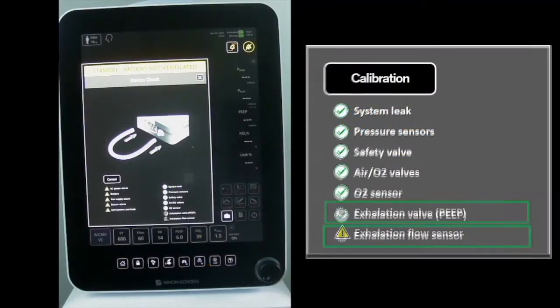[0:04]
The exhalation flow sensor test. The exhalation flow sensor test is comprised of two stages. During the first stage, the exhalation flow sensor is calibrated against the internal inspiratory flow sensor. During the second stage, accuracy of calibration is verified at 30, 10, and 3 liters per minute. In the video, my test is going to fail due to a damaged expiratory diaphragm.
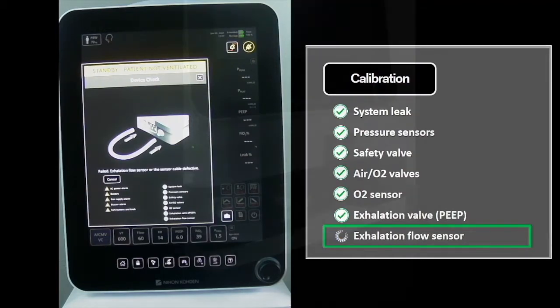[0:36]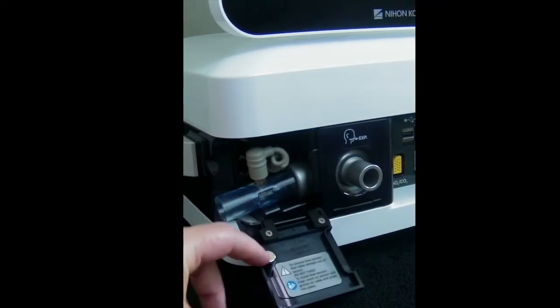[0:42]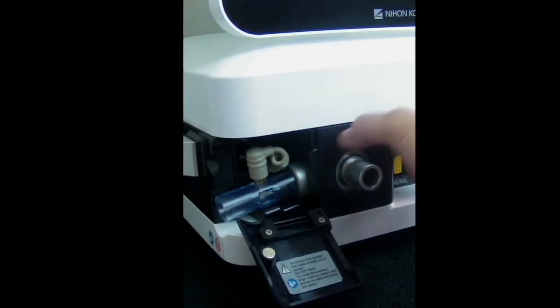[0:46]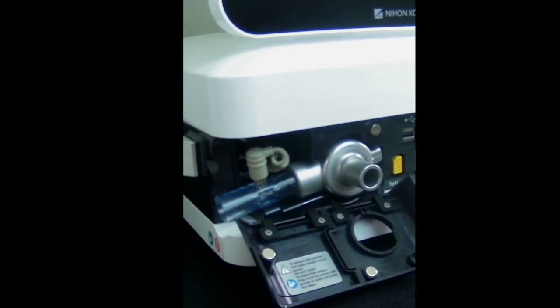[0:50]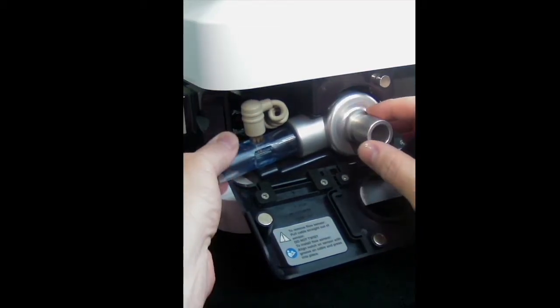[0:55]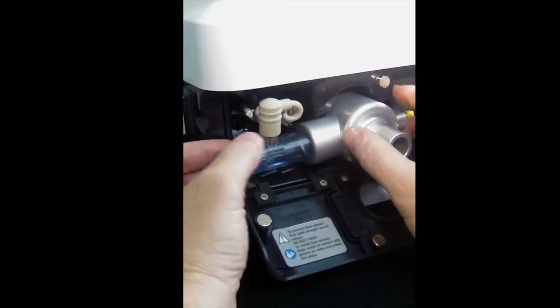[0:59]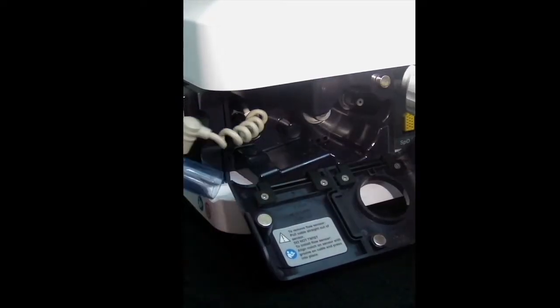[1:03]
To check the exhalation valve parts, open the exhalation flow sensor access door and the exhalation module access door on the left side of the breath delivery unit. Remove both assemblies by pulling outward on the exhalation valve port. Sometimes it just needs a little wiggle to remove it and pull it out. And remove the exhalation flow sensor from the expiratory valve assembly.
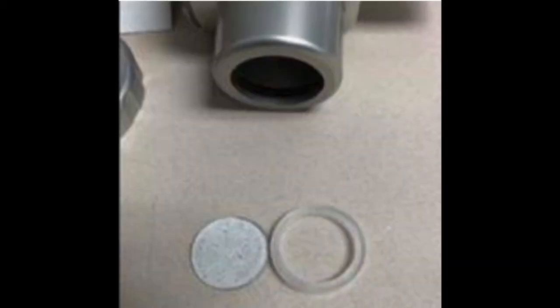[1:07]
This picture is an example of a dirty exhalation valve screen. This was caused by nebulized medication. The nebulized medication dried up and caked, creating this residue, which reduces my laminar flow, which led to my device check not passing during the exhalation flow sensor test.
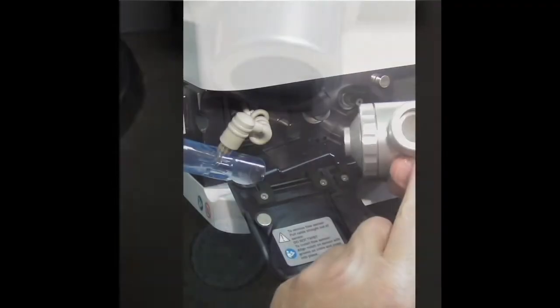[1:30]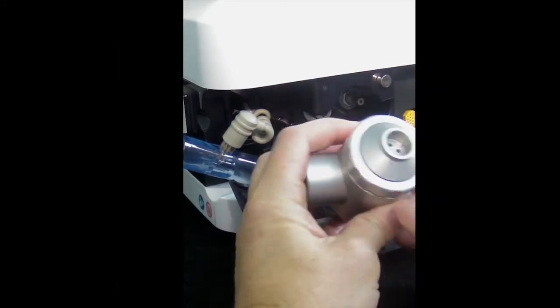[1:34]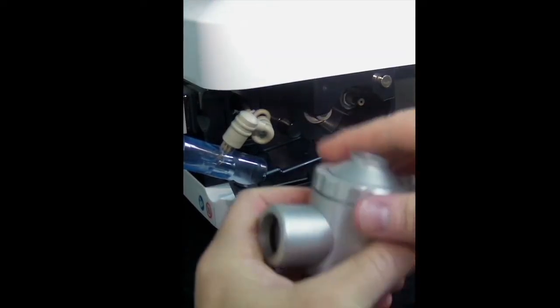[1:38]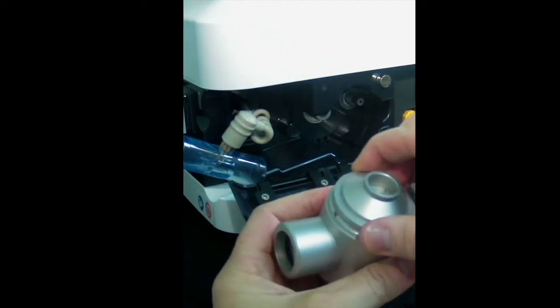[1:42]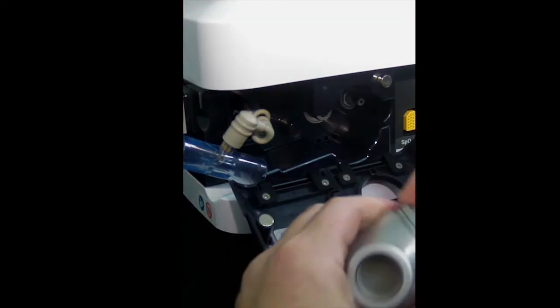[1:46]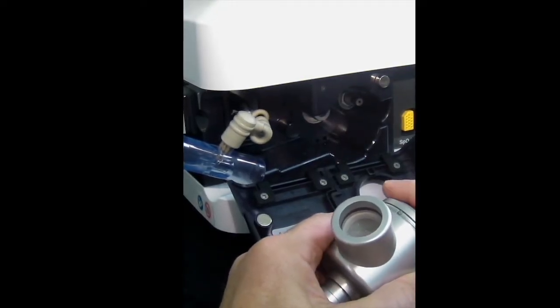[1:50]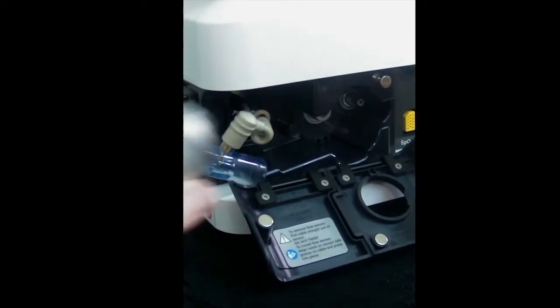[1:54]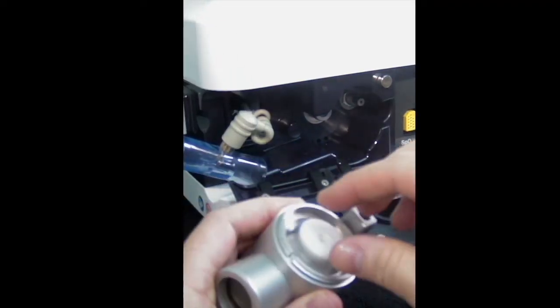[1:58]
I want to check the components of my exhalation valve assembly. So what I need to do is unscrew the top of it right here and open it up. As I'm pointing out, there's a little pin here to show you the alignment. And I'm just going to pull this straight out. It's nice and tight and snug. And I'm going to remove the poppet assembly.
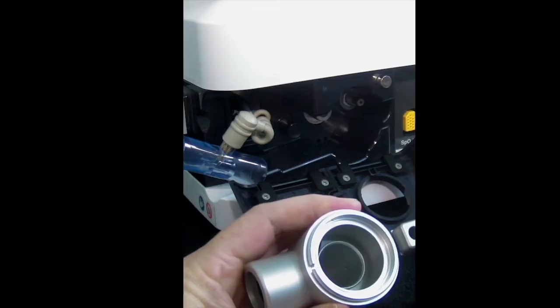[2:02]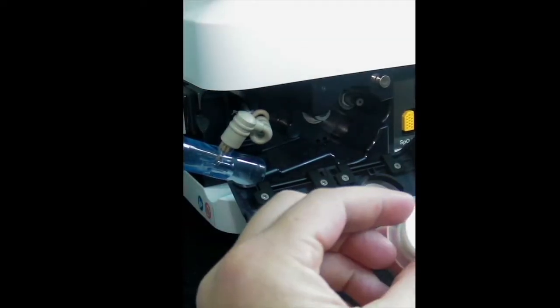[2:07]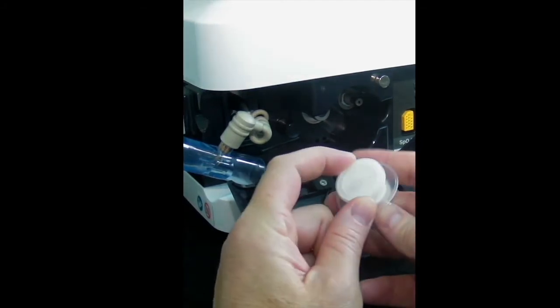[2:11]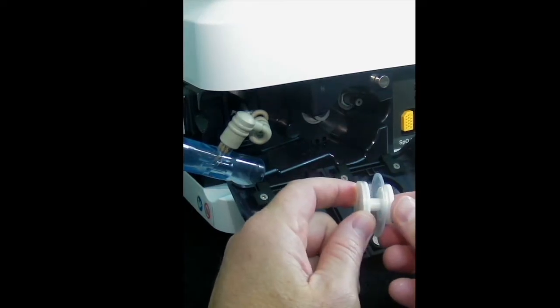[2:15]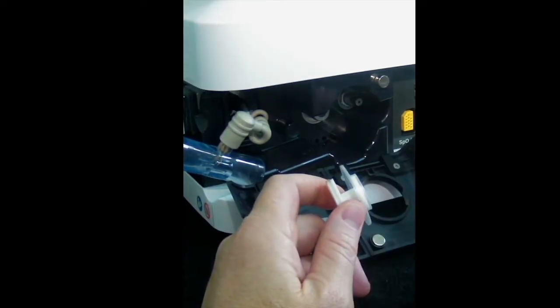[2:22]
Now, I have a bad poppet assembly. My diaphragm has pits on it, which caused it to fail during my expiratory flow sensor test. I'm pointing out the little pits on it. So I'm looking for wear and tear or cuts and tears on my diaphragm and everything else. I can replace these individual parts, and I'm just showing an example of how I'd screw it back together.
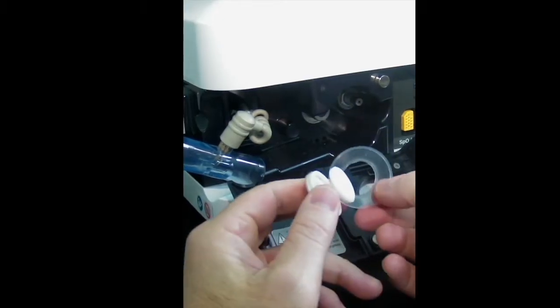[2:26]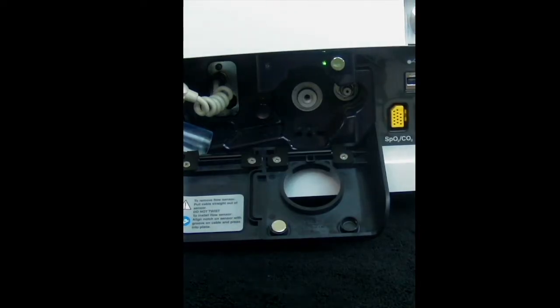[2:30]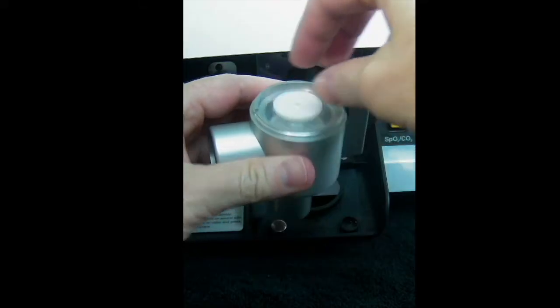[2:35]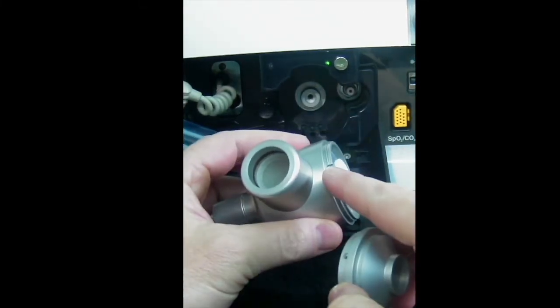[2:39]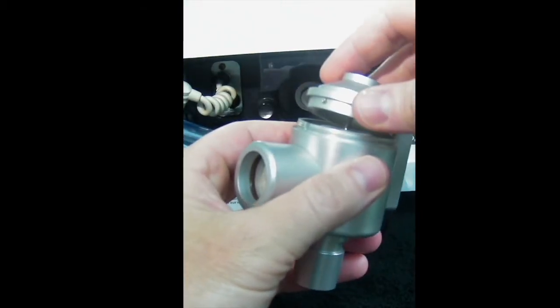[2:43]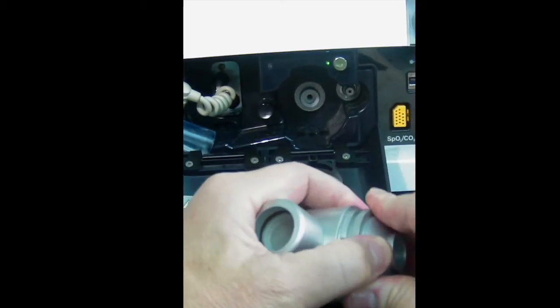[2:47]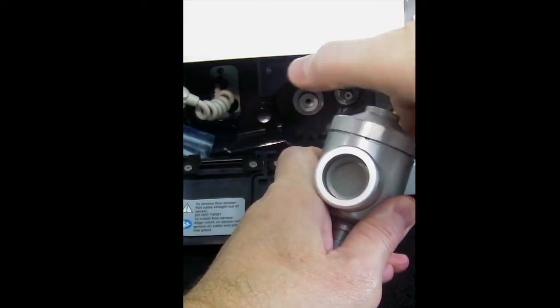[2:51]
This is something I want to inspect with my PM on each device. But what I'm going to do is just replace the whole poppet assembly. It makes it a lot easier. And I'm just going to push this down, and reattach the lid. I want to line up the pin and just push it down in place. And go ahead and screw the cap back on.
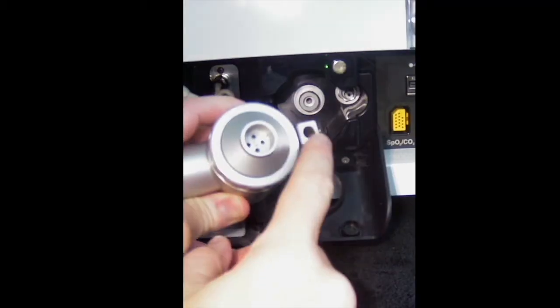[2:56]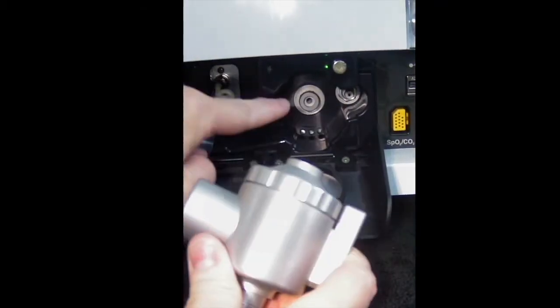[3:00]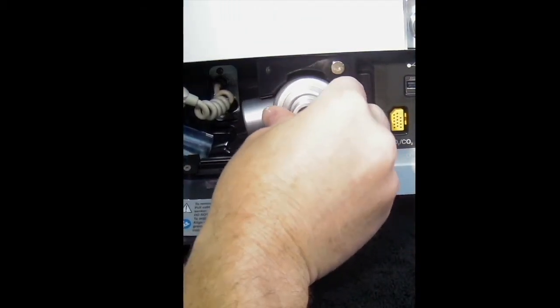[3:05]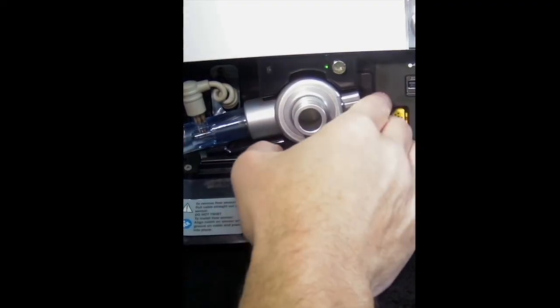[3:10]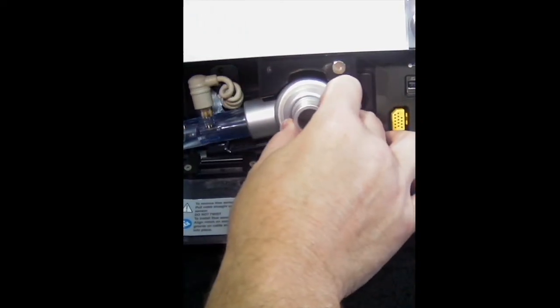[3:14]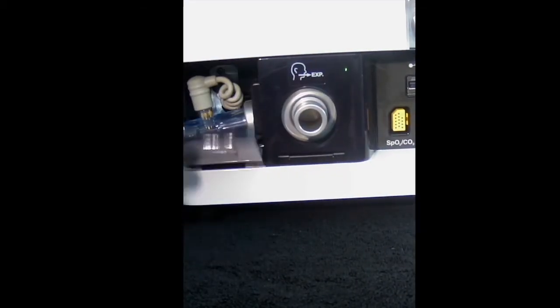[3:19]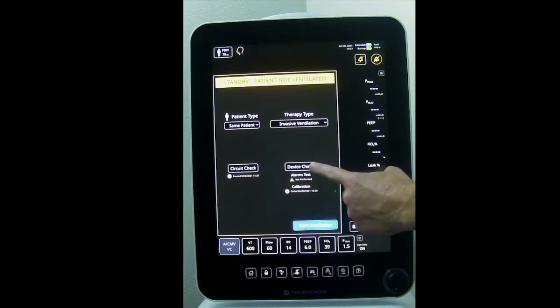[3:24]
I'm just going to put the exhalation valve assembly back in and line it up. I'm going to point out where I line it up. And push it straight in and maybe give it a little wiggle. Now the access doors should freely close. They're just magnetically closed, but they should never be forced. So if it takes a lot to close the door, I need to realign it. As you notice, it just easily snaps back in place. And I'm going to rerun the device check and it's going to pass since I replaced that part.